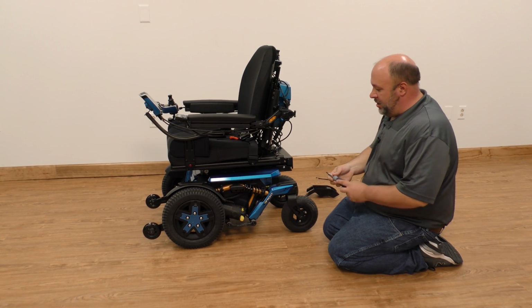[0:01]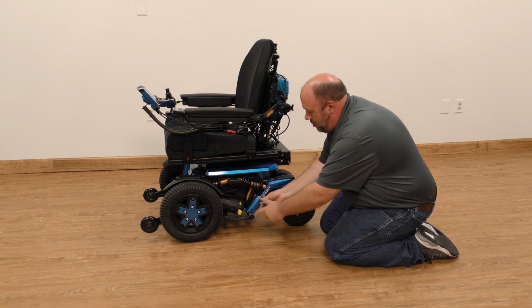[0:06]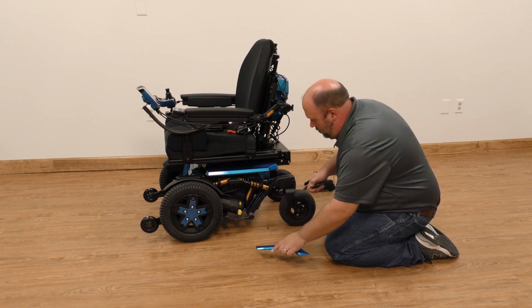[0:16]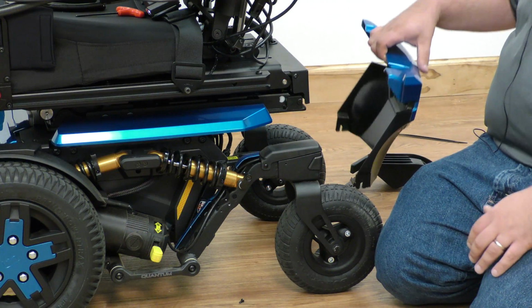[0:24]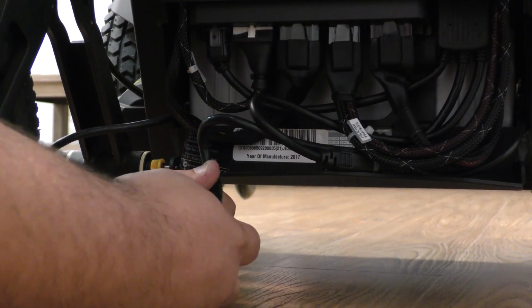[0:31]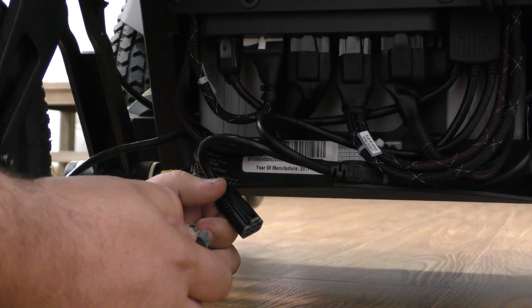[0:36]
On caster sensor replacement, the first thing you want to do is remove the shroud that comes up the caster arm. There will be two Phillips head screws. And then also remove the backside as well. The back shroud will have to be removed in order to access the plug where the caster sensor is plugged in. Pull out the cable, follow it to the caster sensor, press and disconnect.
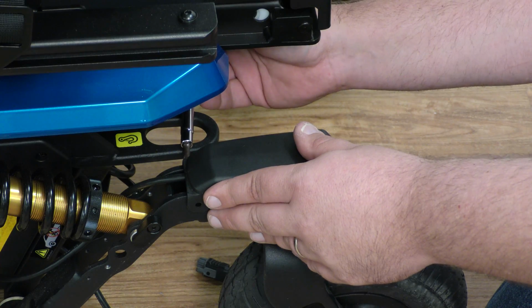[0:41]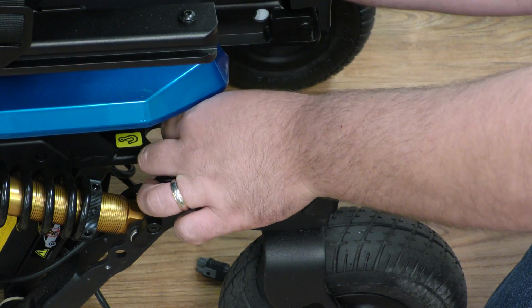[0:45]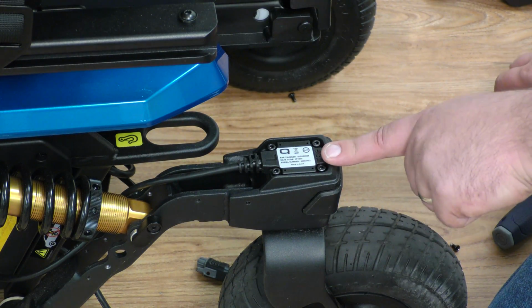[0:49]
Next, remove the two Phillips head screws, one on the outside, one on the inside, and remove the top cap. So this right here will be your caster sensor. The caster sensor maintains the stability of the front.
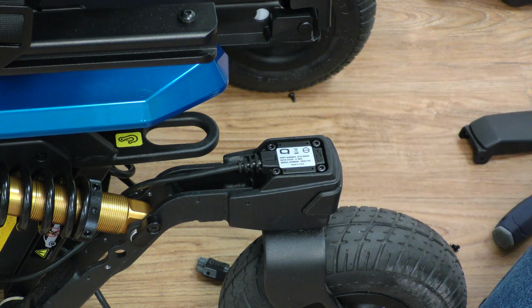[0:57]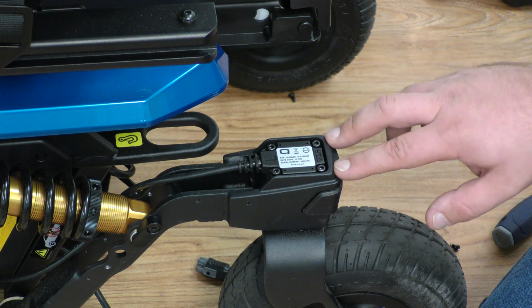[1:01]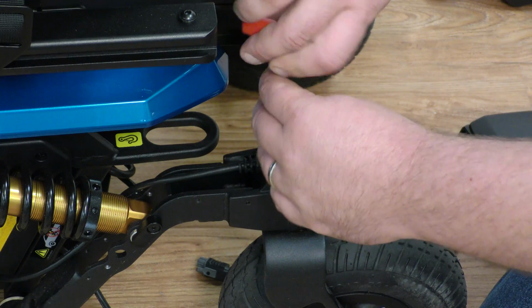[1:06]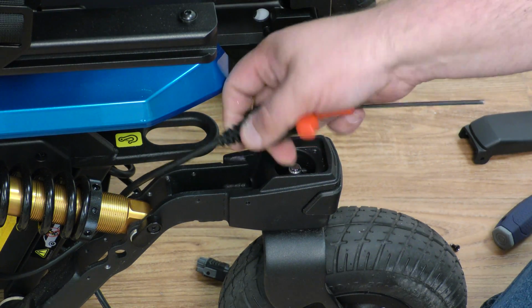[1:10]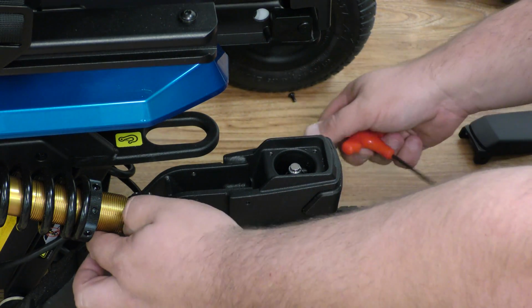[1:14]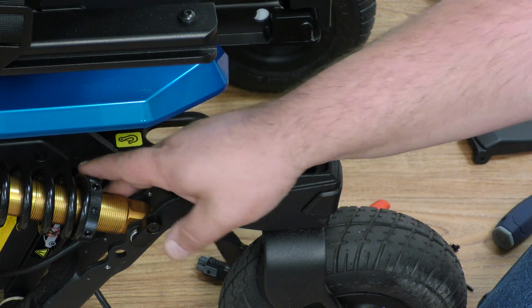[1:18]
To remove the caster sensor, there are four 3-millimeter Allen head screws that hold the sensor in place. Remove each screw. Then remove the caster sensor. And then you will need to clip the wire tie that holds it into place.
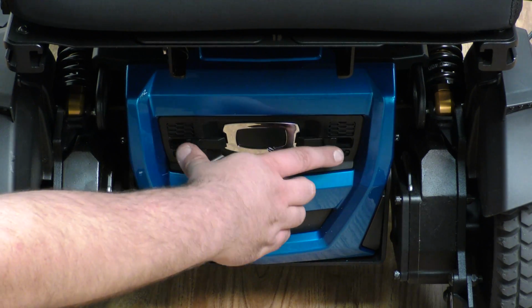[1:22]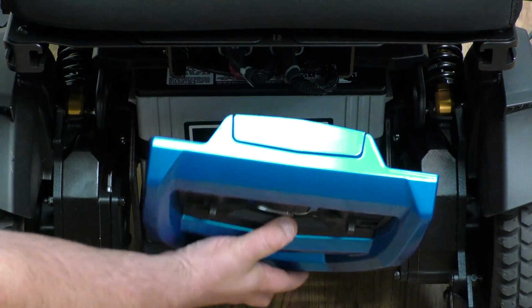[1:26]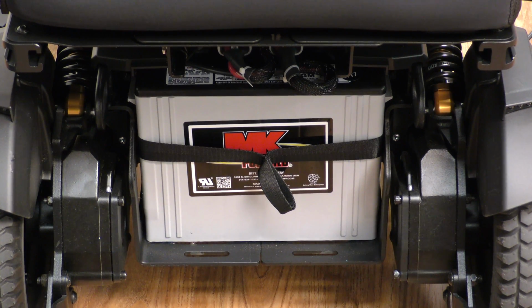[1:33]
Remove the front battery door by pulling towards the center these two tabs. The door comes right off. And the batteries don't have to be completely removed. They only have to be moved forward approximately an inch to allow the cable to be fed back through.
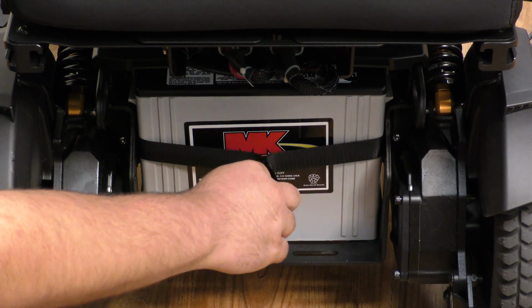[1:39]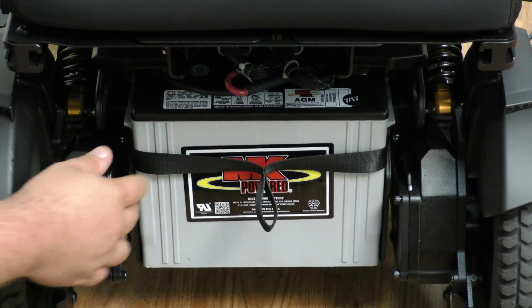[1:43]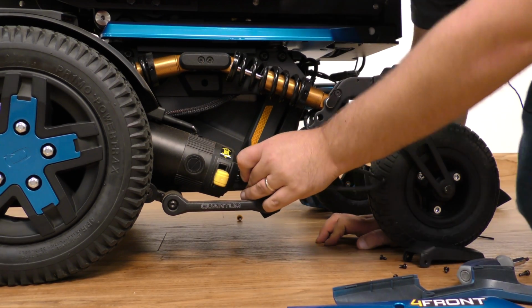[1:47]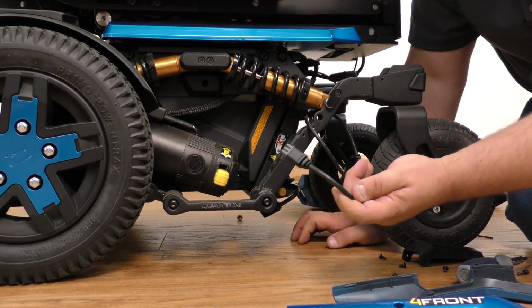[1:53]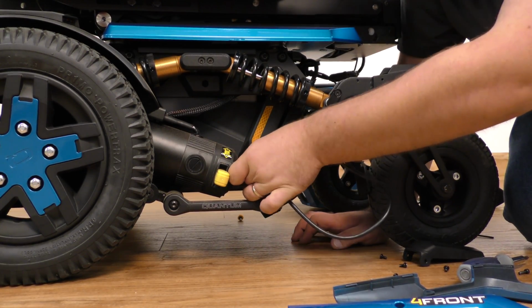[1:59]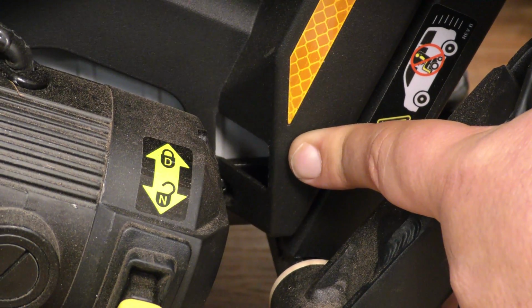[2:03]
So we grab our little tab, we pull our battery forward. Feed the cable through. I have to pull up a little bit on that cable to actually get it through. That should come right through, right by the motor. And then with your new caster sensor, feed the wire first. Make it easier. So we're going right into this little cutout.
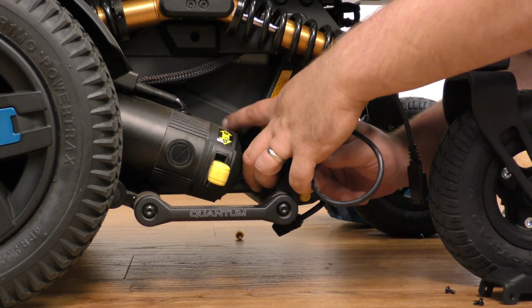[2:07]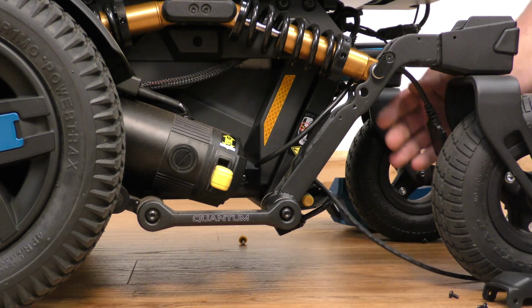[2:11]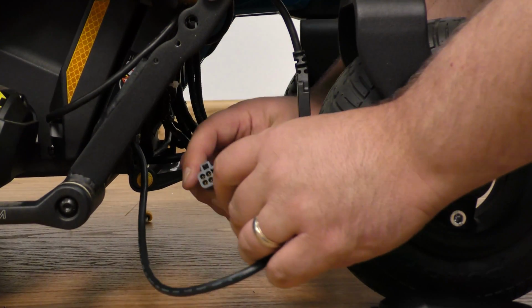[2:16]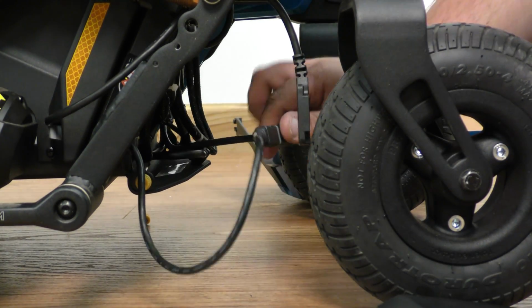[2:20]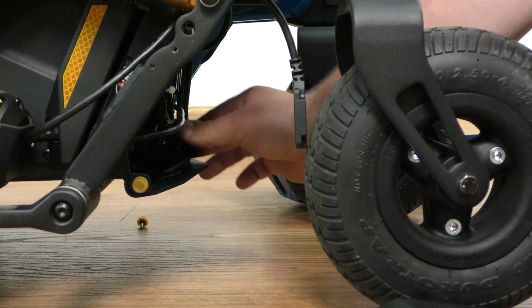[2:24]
Pull the cable. You want to zip tie it back to the caster arm. Then we take our connector and we plug it back in. Tuck the excess wiring inside the tray underneath the power module.
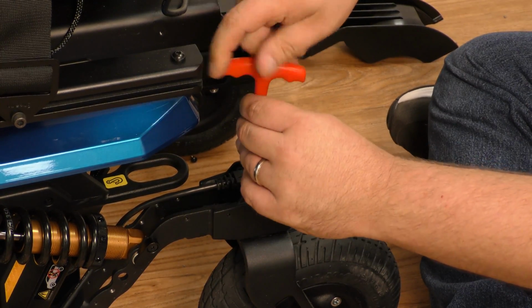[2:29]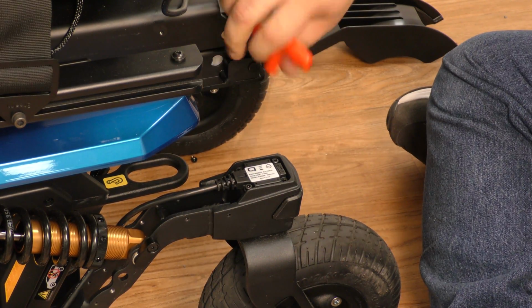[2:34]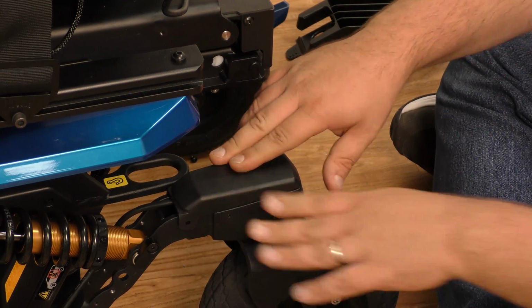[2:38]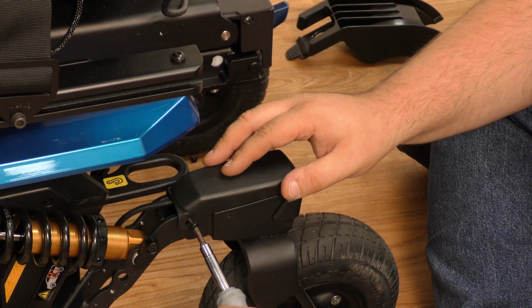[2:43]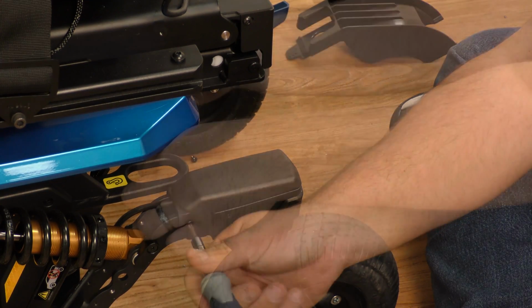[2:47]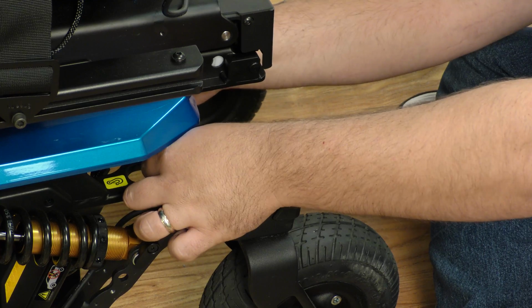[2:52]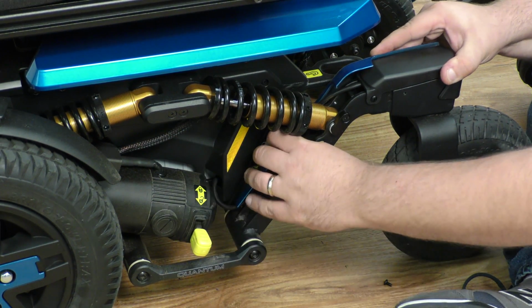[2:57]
Now we replace the four 3-millimeter screws. We replace the cap back on. And replace the Phillips head screws. Next, we're going to replace the shrouding, making sure that there is no access to that wiring.
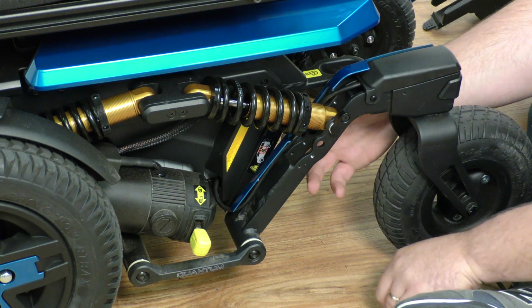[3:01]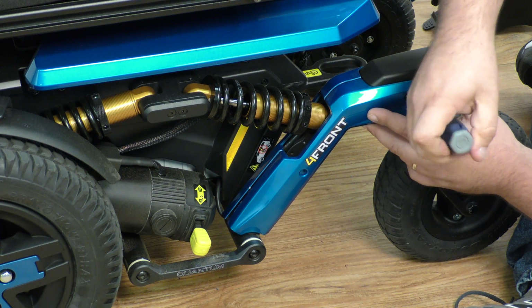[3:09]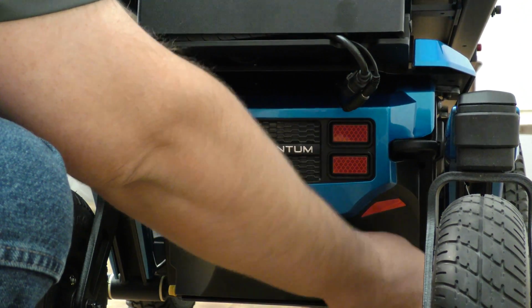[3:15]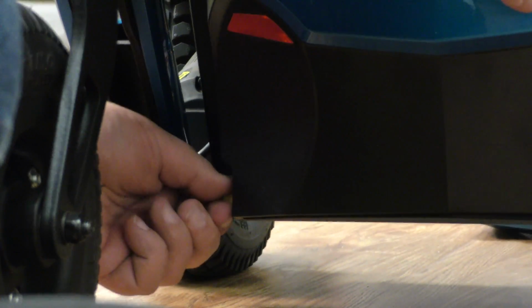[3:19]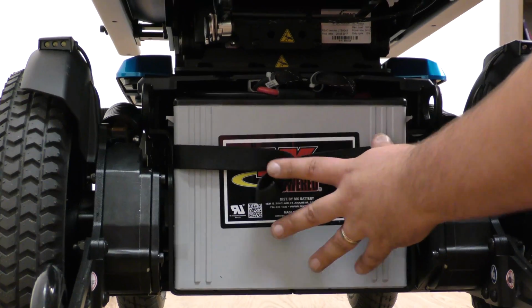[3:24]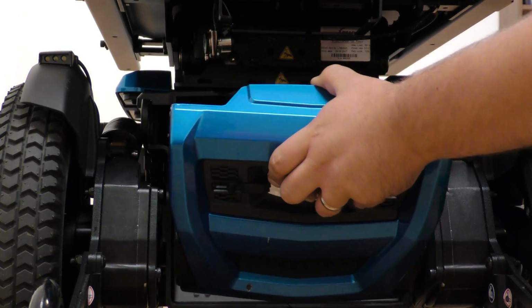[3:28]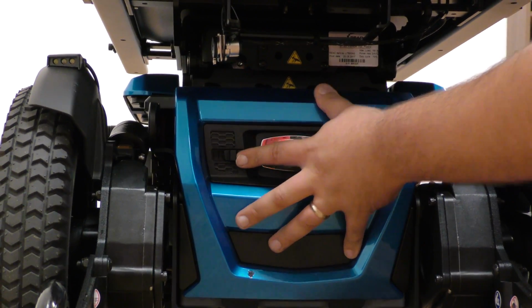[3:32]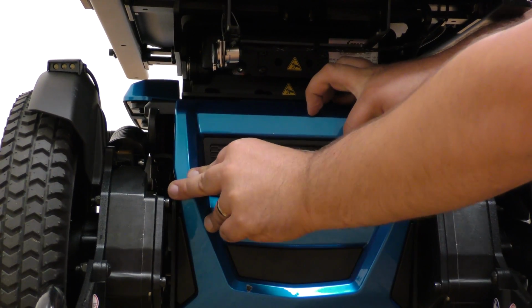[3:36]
Then, we're going to put the back shroud back on, retightening our thumb screws. Push the batteries back in. Replace our front door. And lock back into position.
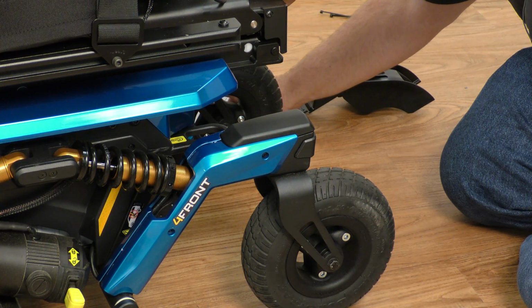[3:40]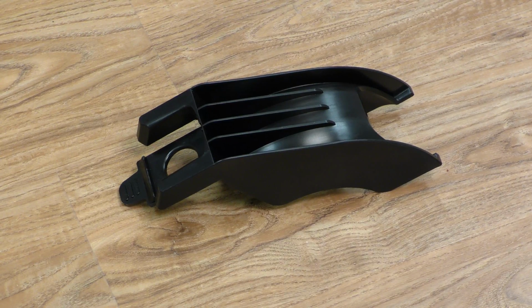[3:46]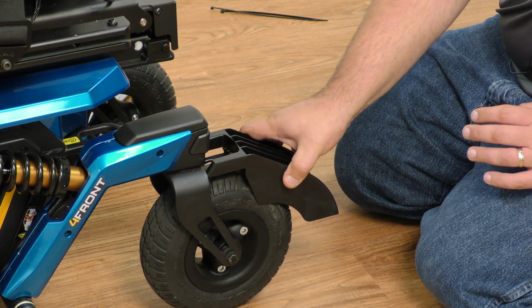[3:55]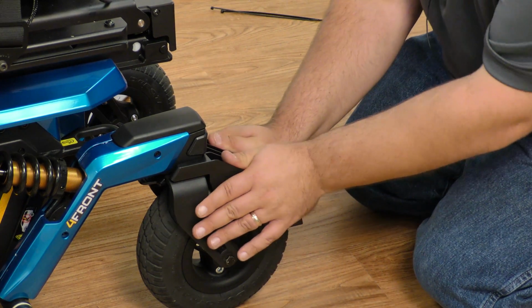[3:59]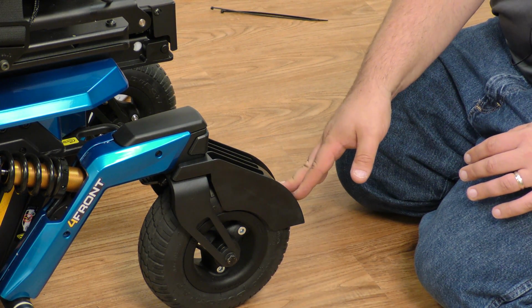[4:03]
Because the sensor was replaced, the sensor has to be recalibrated to our QLogic 3 system. So the first thing you want to do is get your caster alignment tool. The caster alignment tool is available through tech service when a caster sensor is ordered for replacement. It simply goes up over the caster and locks it in place. The caster sensor is designed during calibration to keep the wheel in perfect alignment while the calibration is happening.
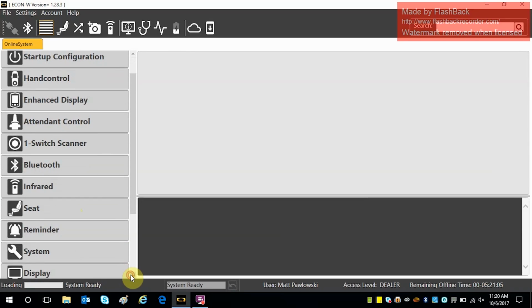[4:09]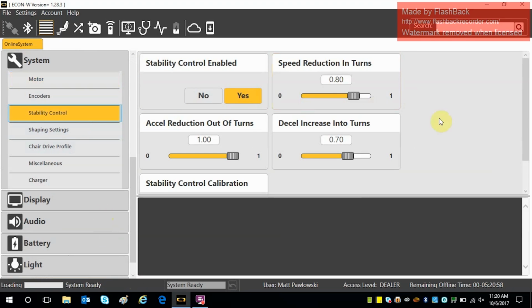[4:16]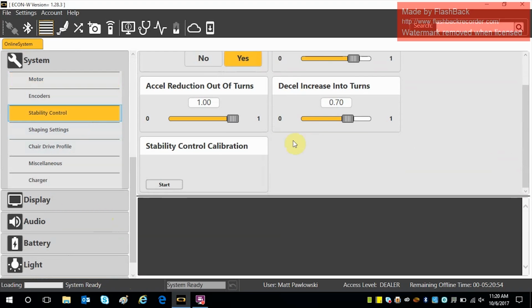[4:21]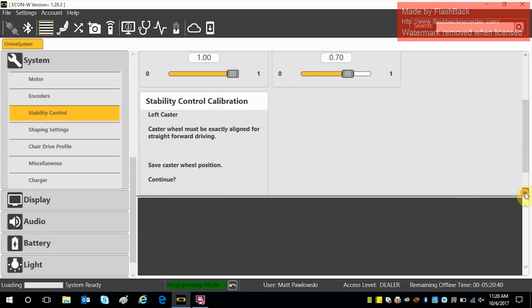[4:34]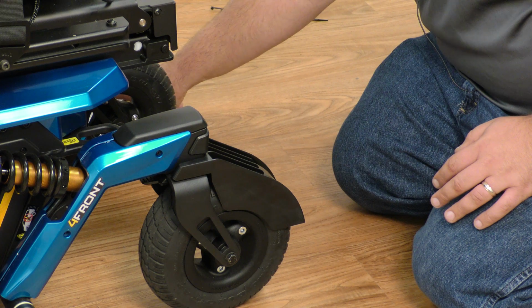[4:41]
So we are going to go down to our system on our Econ W and we're going to click on stability control. We're going to scroll down to stability control calibration and we're going to press start. It says left caster wheel must be exactly aligned for straightforward driving. And then it says save caster wheel position. We click yes.
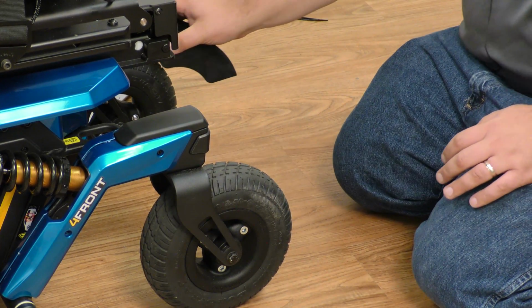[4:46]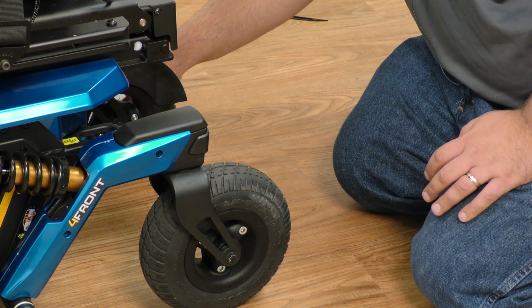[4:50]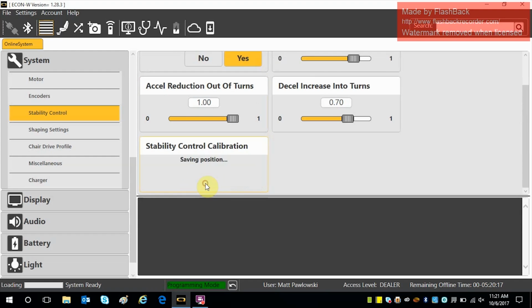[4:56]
The right caster. So we're going to remove the tool, and we're going to put it on the right caster. And then once it goes to the right caster, the wheel must be exactly aligned for straightforward driving. Save the position. We click yes, and the calibration is complete at that point.